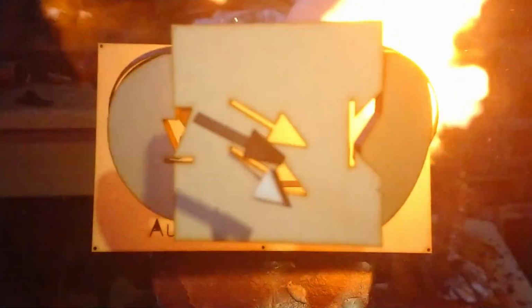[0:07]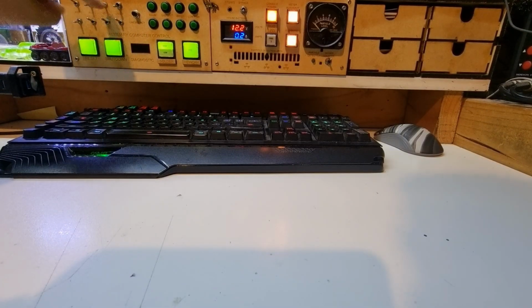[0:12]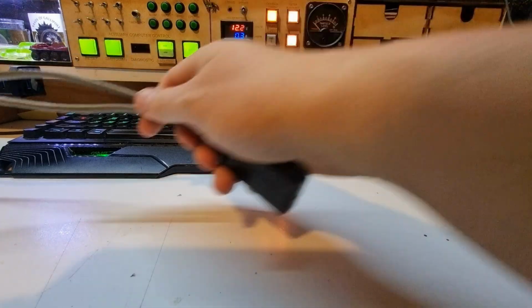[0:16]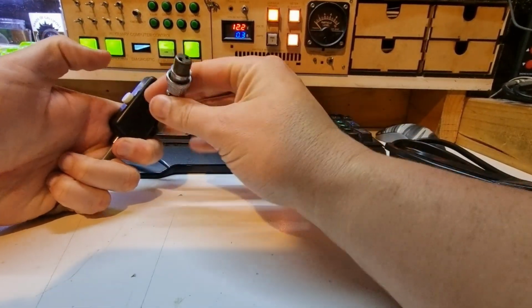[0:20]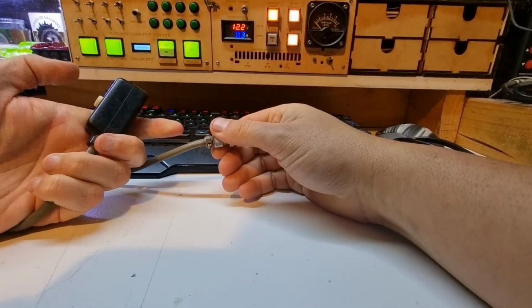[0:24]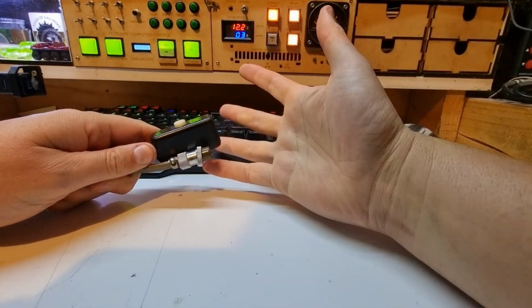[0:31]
We're in for another repair video today, and today we're going to need some cable because we're fixing this. Looks pretty innocuous, got a button and a two-prong pin plug on the end. This is off an X-ray machine made in 1968. I've been playing with this and I'm trying to get it up and ready to go for the local animal
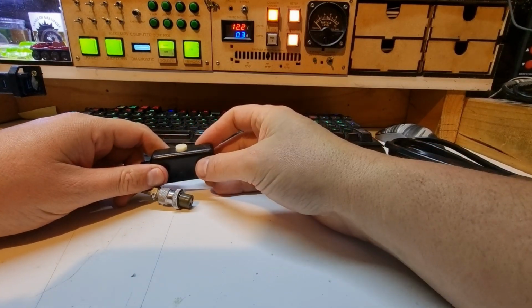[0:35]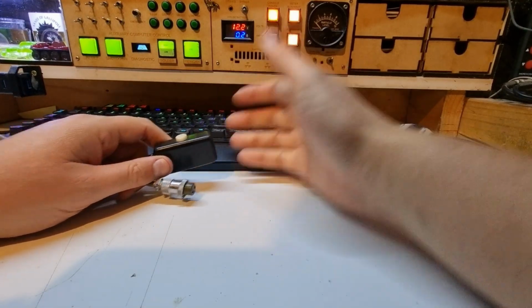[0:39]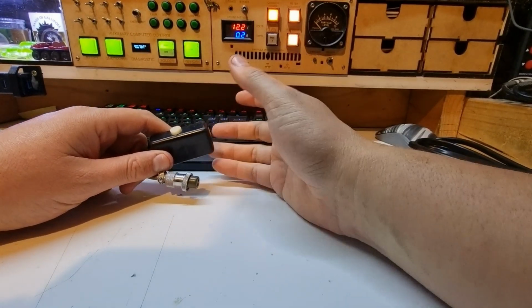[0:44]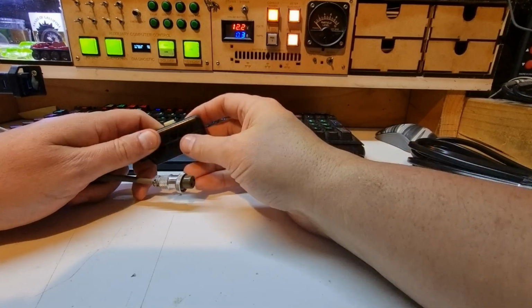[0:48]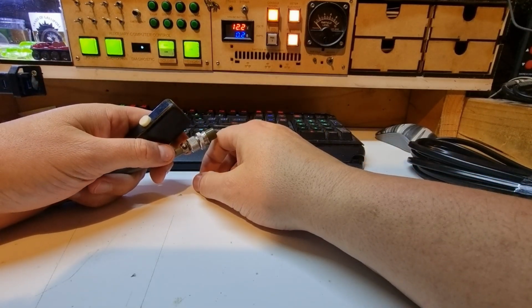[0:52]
rescue. But at this point we're going to need to find a digital cassette for it that's likely to cost about 14 grand. So before I go to the expense of actually looking for donations and getting this thing working, I need to know that it actually works properly. Last time I tested this, I had the exposure set to 0.03 seconds.
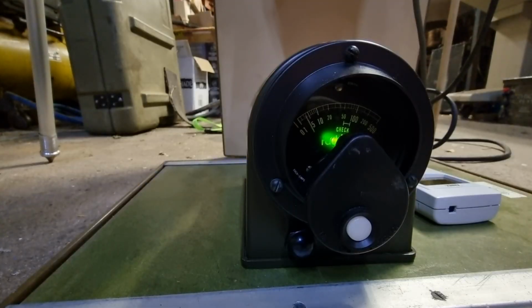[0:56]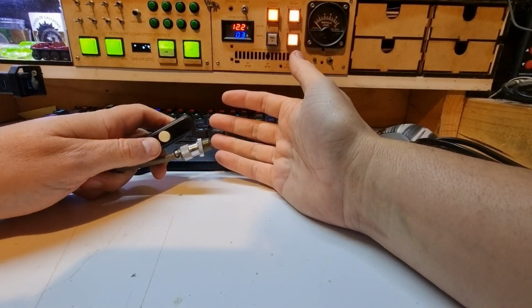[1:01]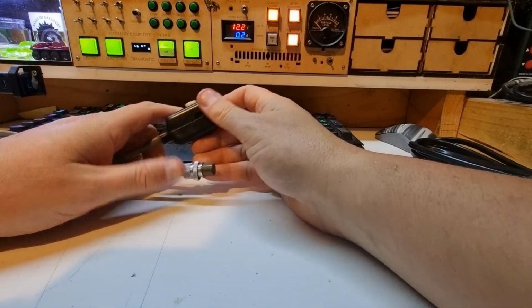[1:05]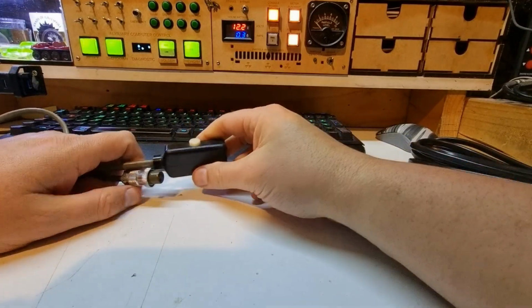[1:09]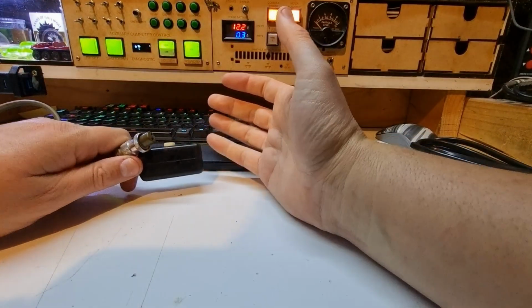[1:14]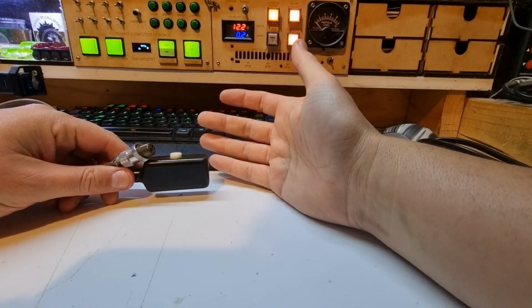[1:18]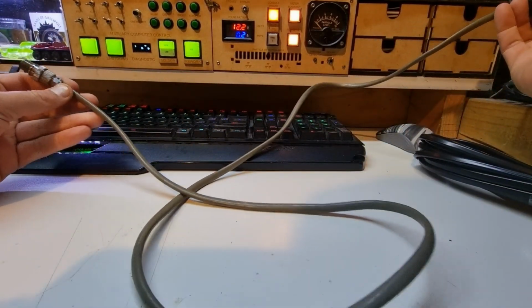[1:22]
And you can see from this little clip I'm going to throw in here that it definitely wasn't 0.3 seconds. It was quite a bit longer. So this lead, however, is only about a meter long. And you can hear from the background of that clip the little Geiger counter going off, which is my Radiacode 101. It's going off its tits because of all the backscatter. So I'd like to get a little bit further than a meter away when we test that.
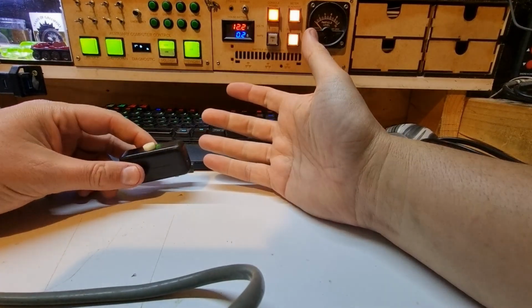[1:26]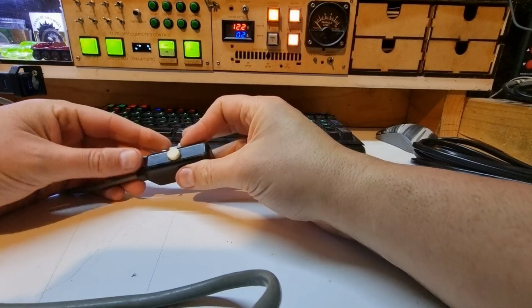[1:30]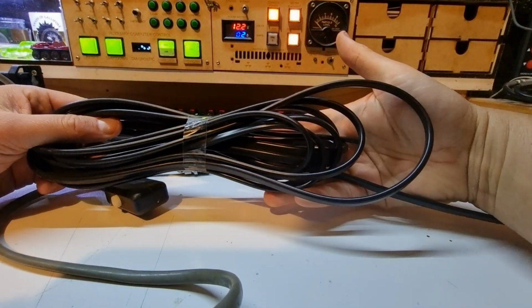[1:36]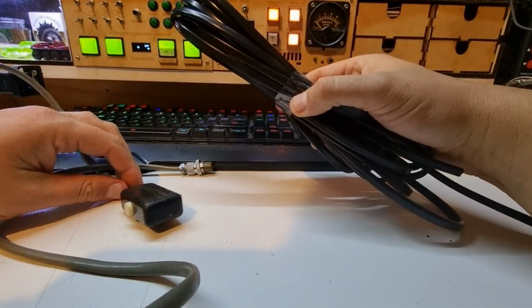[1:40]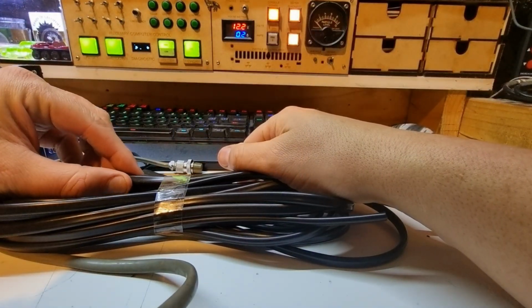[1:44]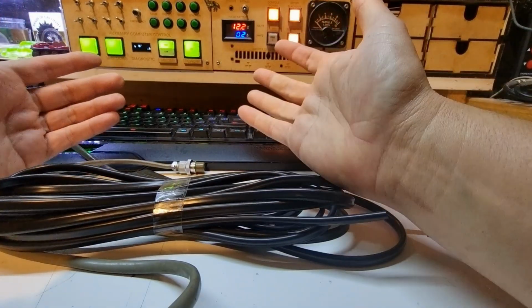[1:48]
Later on, I have a little 433 megahertz remote control kit. I might make a wireless remote for it. But we need to see if the timer works. So I'm going to use some of this cable that I had set aside for my Land Rover Perentie project and use it for a trigger button on this. Because I don't like getting irradiated, and I have to sit my license out for 3 months. So, yeah, I guess we'll use this instead.
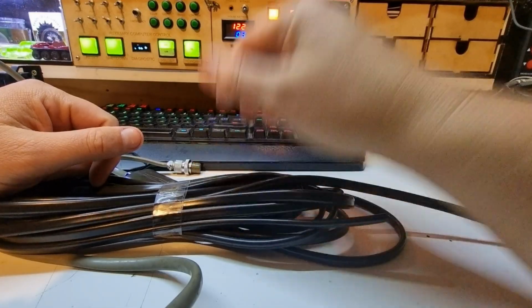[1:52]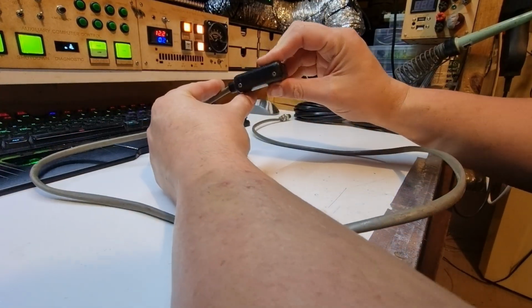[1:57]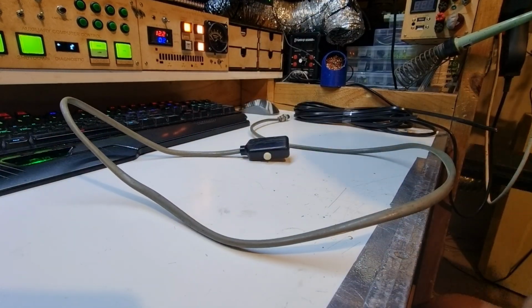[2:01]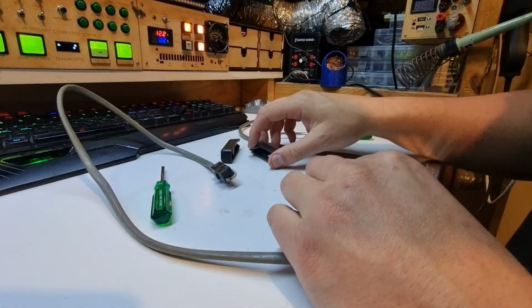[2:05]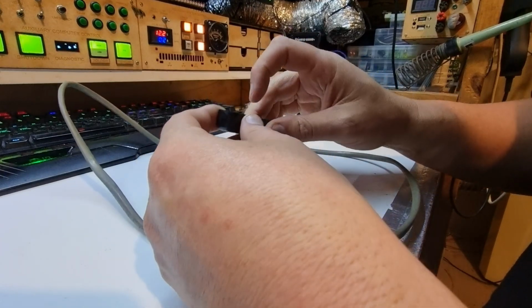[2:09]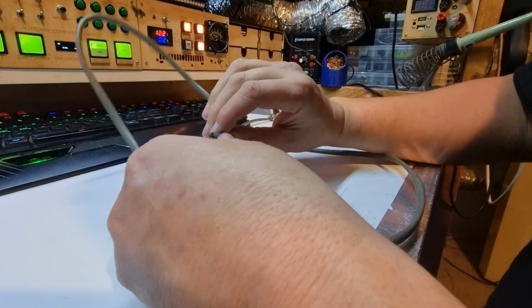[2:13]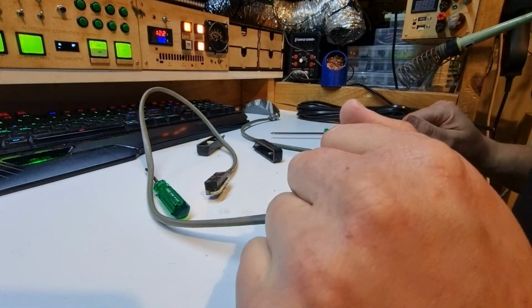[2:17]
We'll get more later. Alright, first order of duty, I need to look at how to get the switch open. Which looks like it's got a couple of Phillips screws there. Alright, fairly simple opening. And the screws remain somewhat captive. And this button looks pretty good. I might put a little bit of Teflon spray in there, but other than that, it's a pretty standard micro switch. Not a bad job.
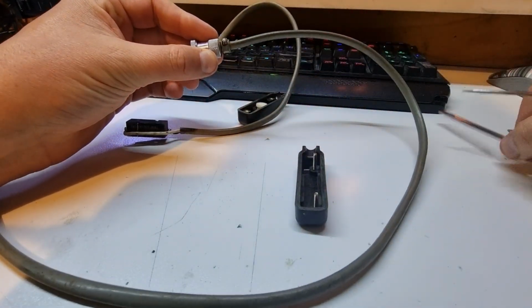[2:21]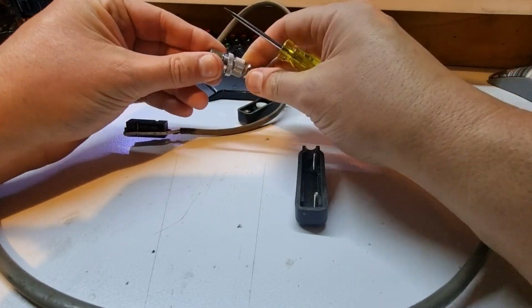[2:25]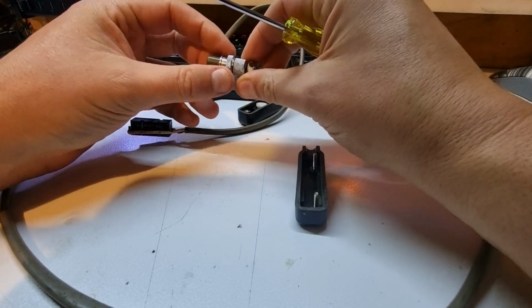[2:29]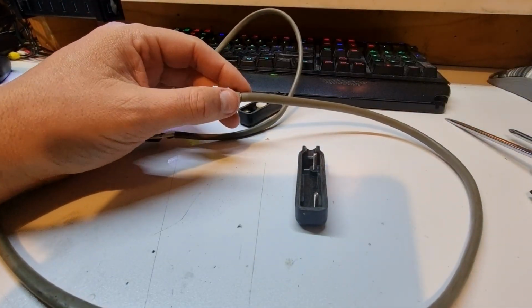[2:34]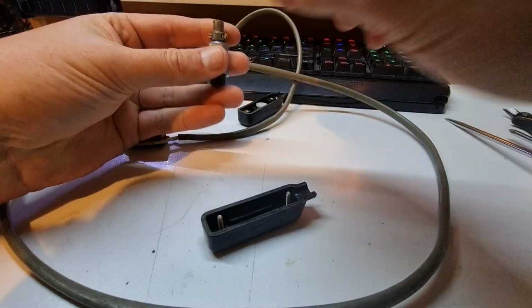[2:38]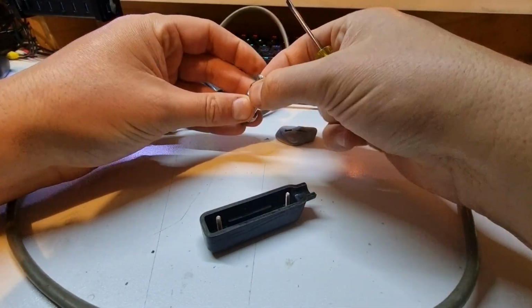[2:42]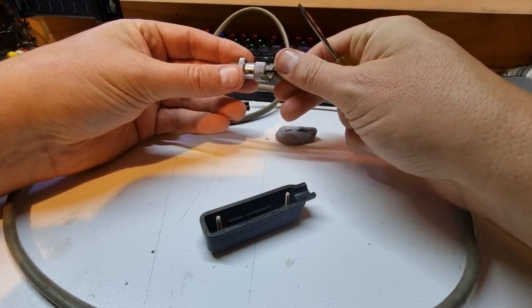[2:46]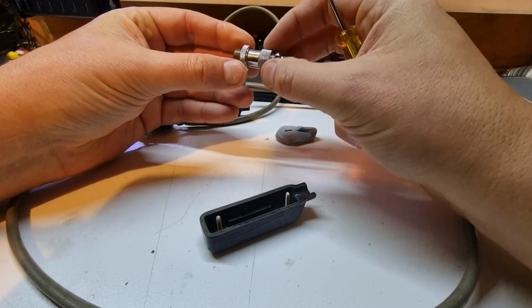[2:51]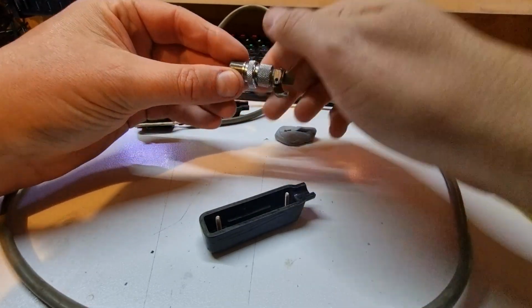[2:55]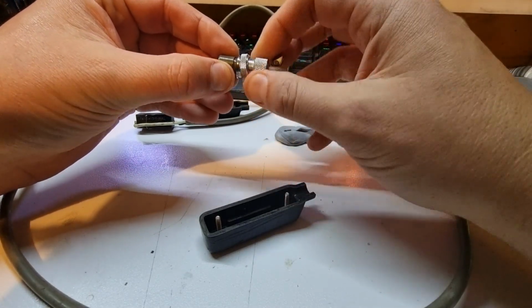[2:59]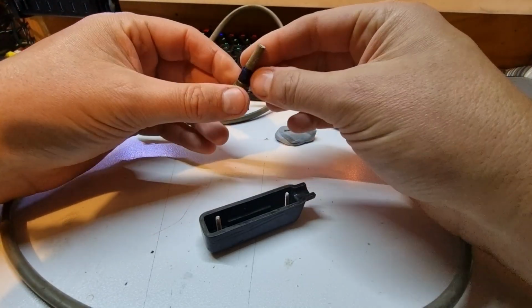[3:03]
Now for the plug shell, I've got a couple of different things to look at. First, we have the cable strain relief, and usually there is a lock nut or something midway through here, but I might make our life easier. I intend to rewire this anyway, so let's take a little bit of strain off things for us. Spin you around. Okay, now, there should be a lock nut somewhere. Okay, this one would appear to be just a little different to the ones I've dealt with before. It appears that this part is threaded in. All right, that's a little different.
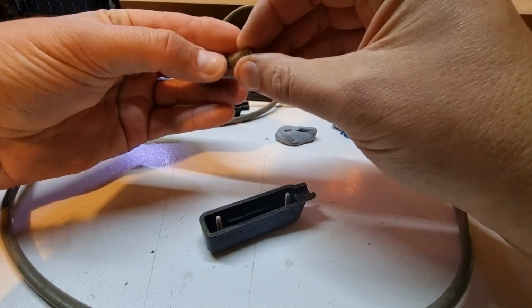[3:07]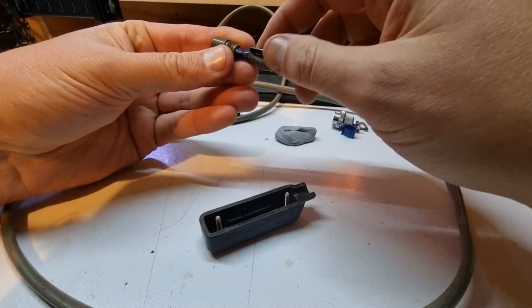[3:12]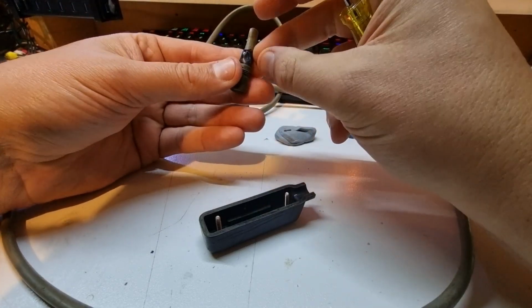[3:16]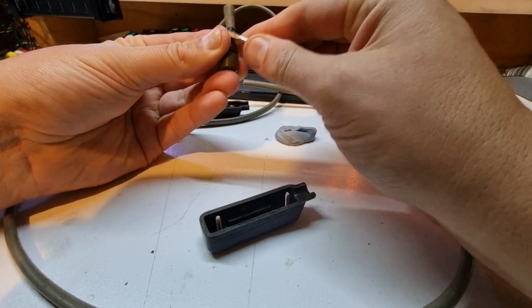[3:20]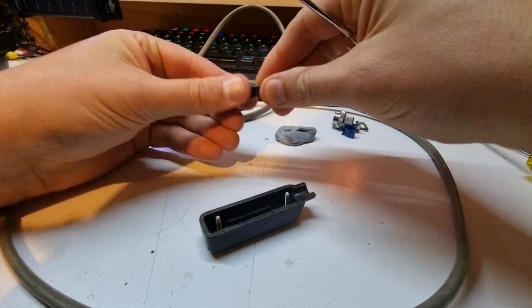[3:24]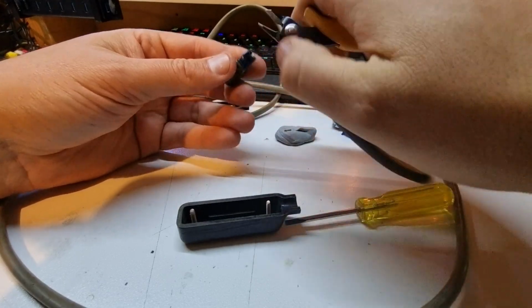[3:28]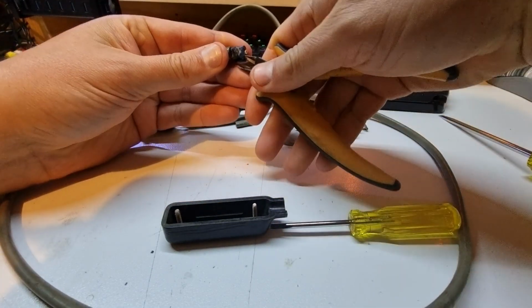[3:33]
And a bit of old insulation tape. This looks like it's had a repair because this is certainly not 1968 insulation tape in here. I'd say that the reason this is so short is probably because it's been repaired a few times and the cable's got shorter over time. We're going to probably do away with all this bit of cable. So we're going to trim it off. Try and dig down as far as we can under this tape and just trim it off.
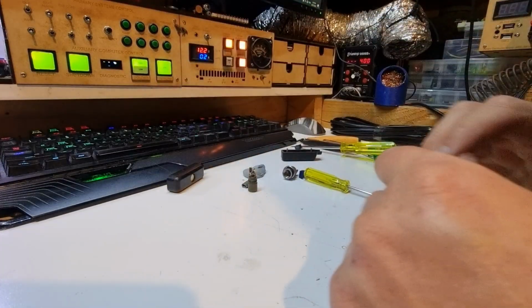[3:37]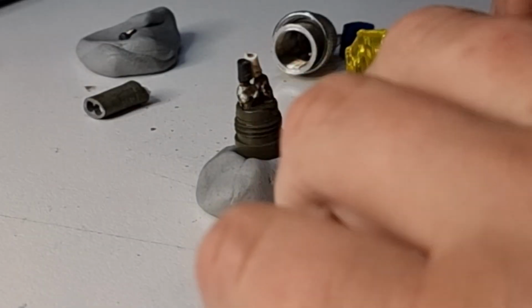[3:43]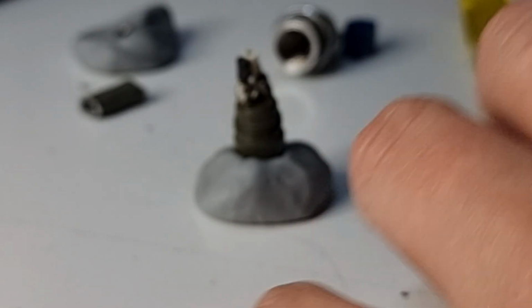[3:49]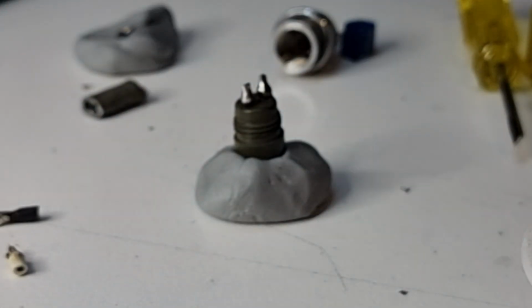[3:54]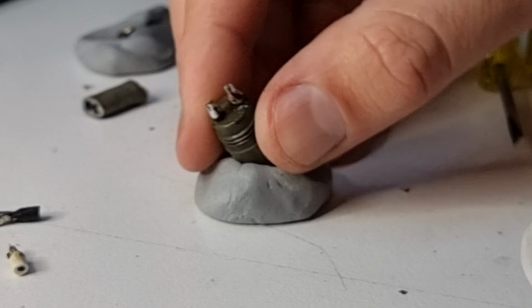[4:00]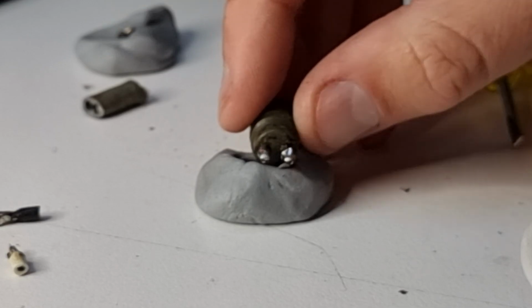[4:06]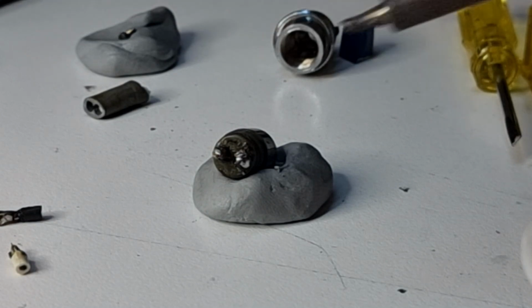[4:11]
Alright, soldering station on. Bit of blue tack here. Stick this down. Alright, got auxiliary lighting, fume extraction. Soldering iron is hot. Move our bismuth out of the way. I think it's gallium. Okay. Let's have a closer look at these. Focus, please. Alright. These don't look like solder cups, they look like straight out pins. I'll give them a bit more of a touch with a soldering iron here. Do they clean up like a solder cup? No, they're wire wrap pins almost. We can work with that.
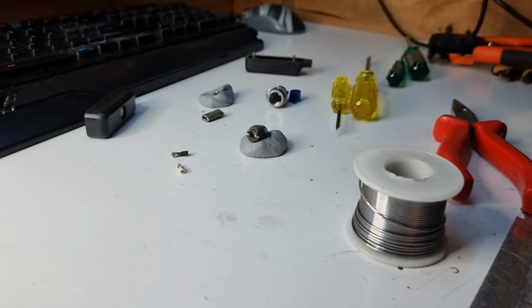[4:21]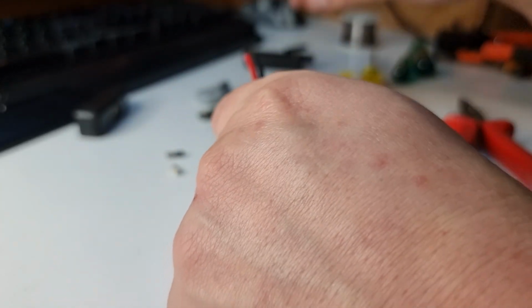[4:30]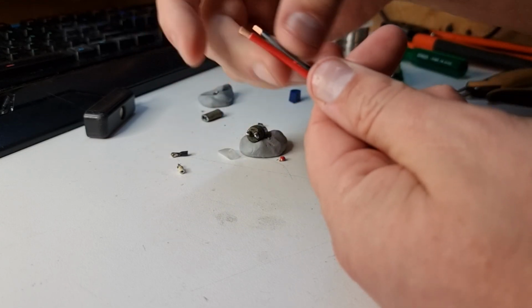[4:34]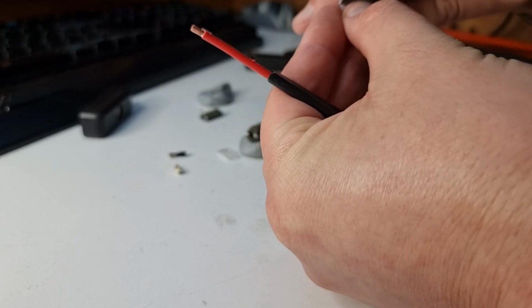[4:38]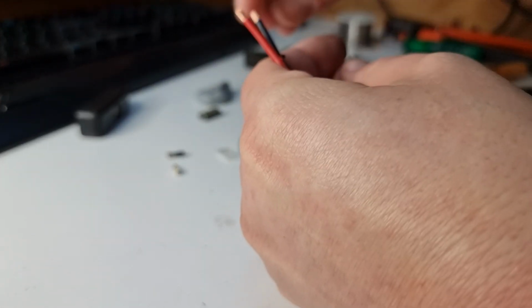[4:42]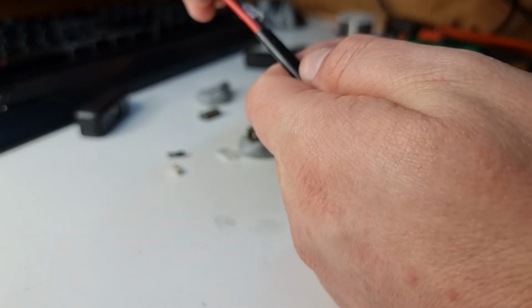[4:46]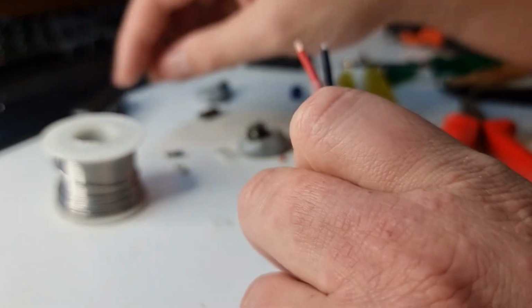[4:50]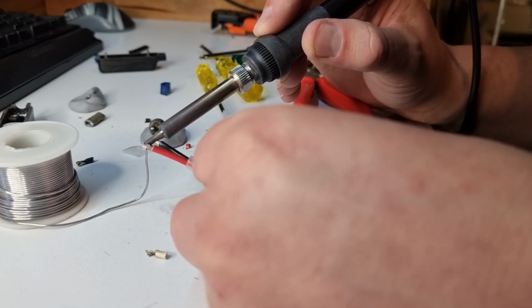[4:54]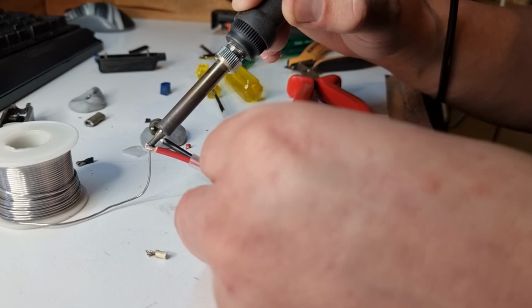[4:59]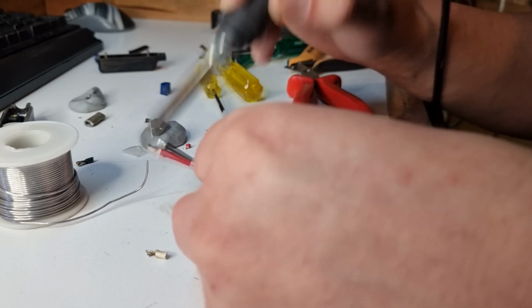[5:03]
Alright, we're going to strip some cable back here. Now, it occurs to me we should probably thread this through the cable gland first before we get too in depth. Alright, bit of heat shrink, we found some clear stuff. Actually, given how short that plug backing is, we might do half of that again. Bit of heat shrink. There we go. And we need to tin these ends. Definitely need my good Weller iron happening again. This one just doesn't quite get the heat into things.
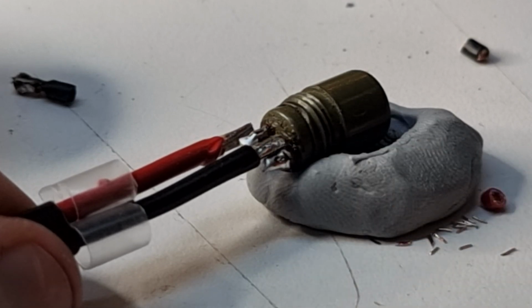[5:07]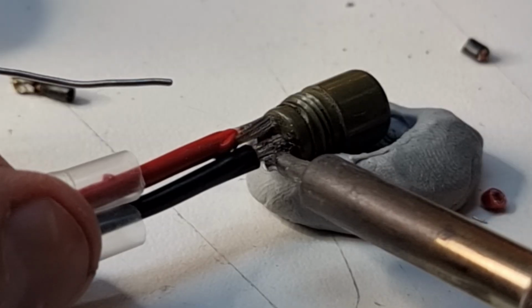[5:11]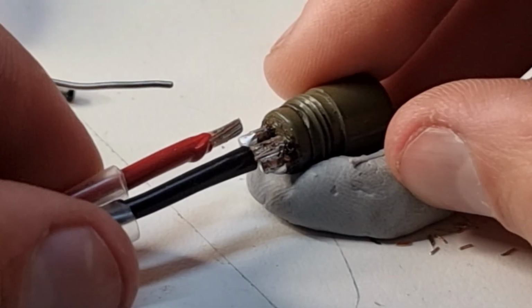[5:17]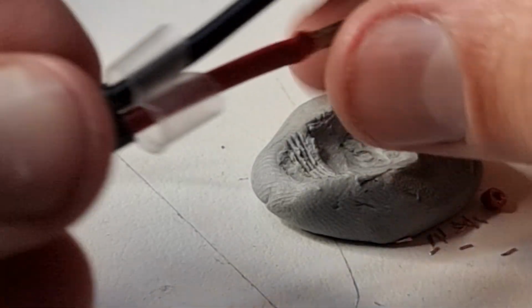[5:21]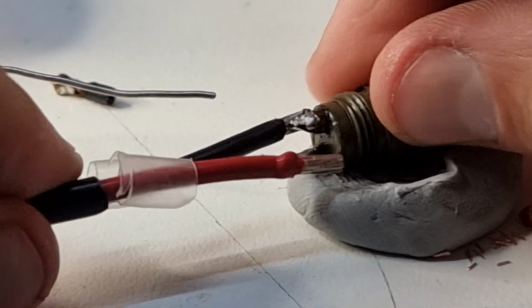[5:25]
I have a bit of a method to my madness, so just bear with me for a minute. Now if I do this slightly offset, I can roll over and solder the other one on the other side, also slightly offset, and things should fit nicely. Oh, those pins twist. Interesting. I'll train this cable to roll over a bit too.
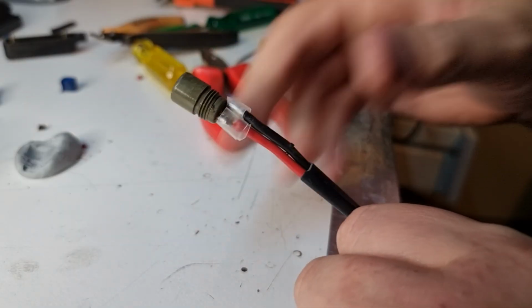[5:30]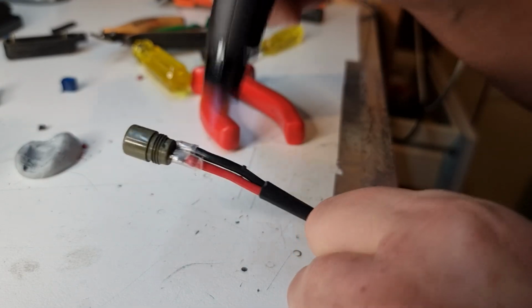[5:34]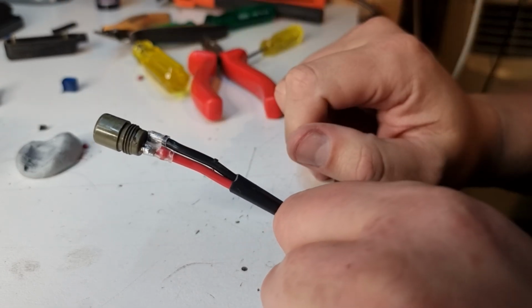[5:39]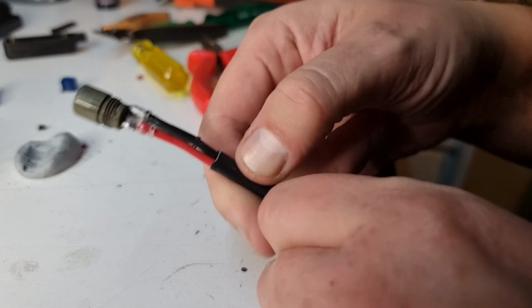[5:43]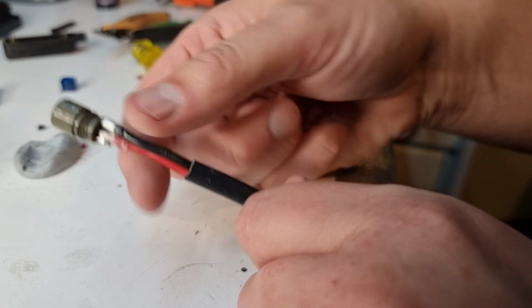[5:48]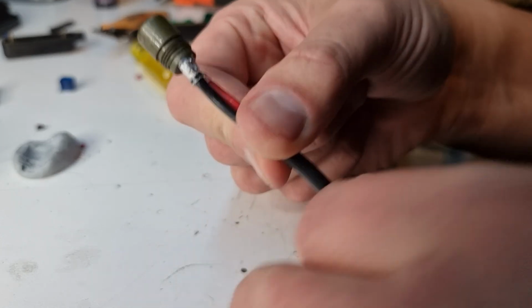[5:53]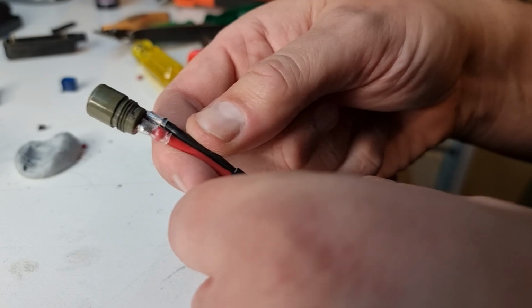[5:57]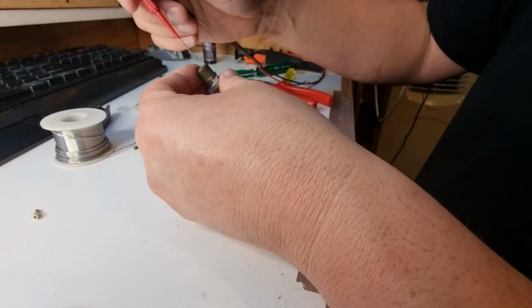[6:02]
Right, now this cable is really designed for slightly thinner two-core flex, like mains cable or something. Not the heavy DC cable I'm putting in here, but we are going a fairly decent distance. And I'm pretty sure this handles mains voltage, so we definitely want that extra insulation in there. It's not the best positioning from the pins, and I know people will be critical of that. Certainly looks better than what was in there, but I need to keep these tucked in here so they fit inside that shell. All right, I'm already frustrated with this cable. I keep dropping stuff. It's difficult stuff to work with.
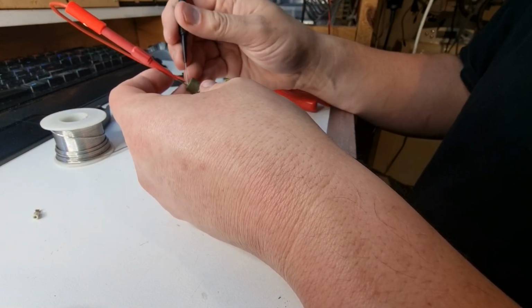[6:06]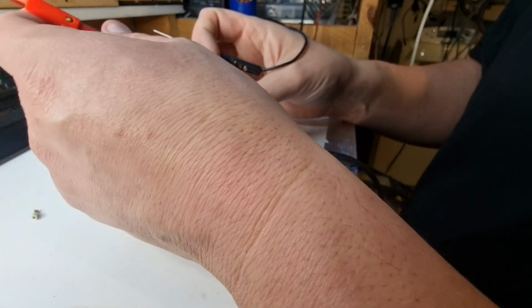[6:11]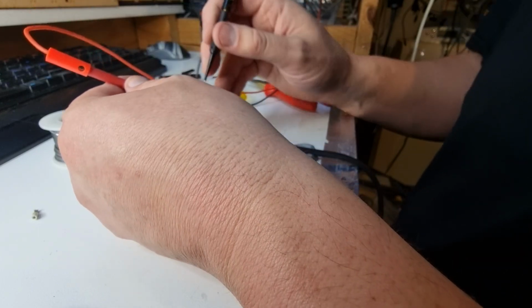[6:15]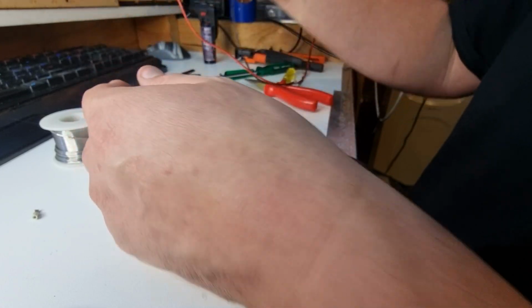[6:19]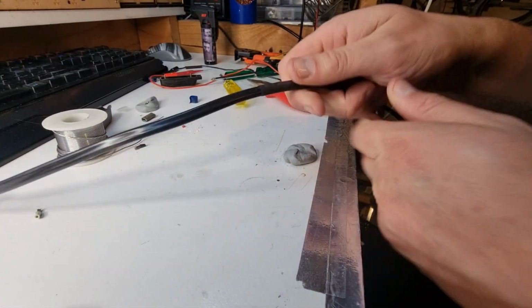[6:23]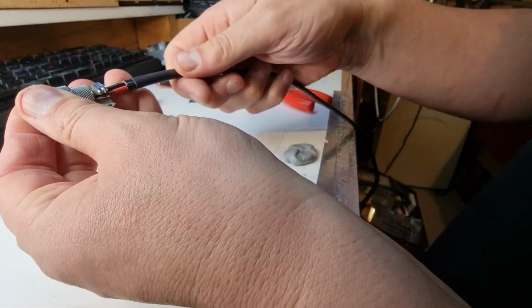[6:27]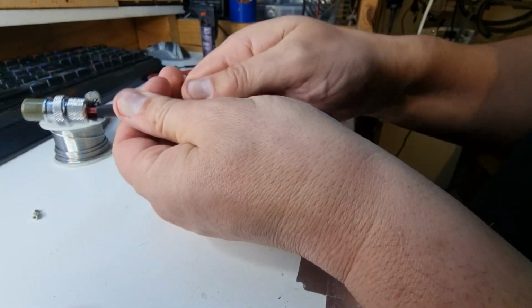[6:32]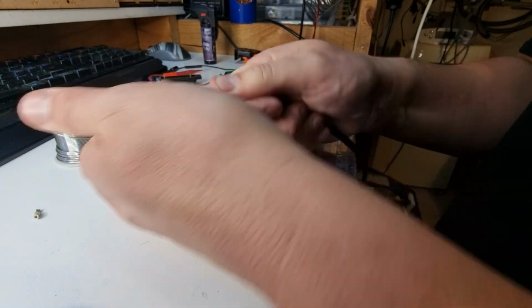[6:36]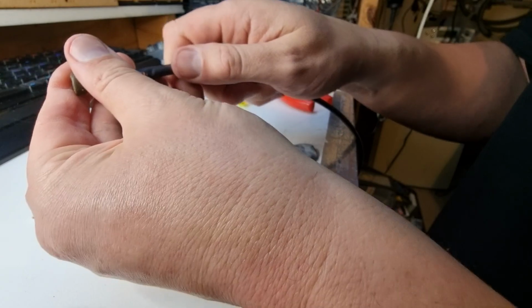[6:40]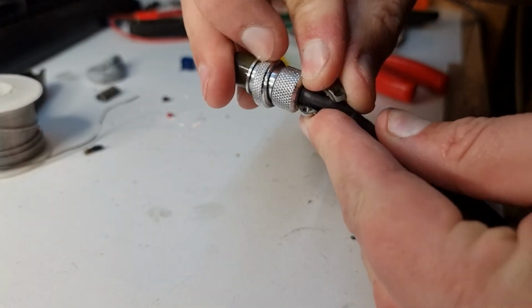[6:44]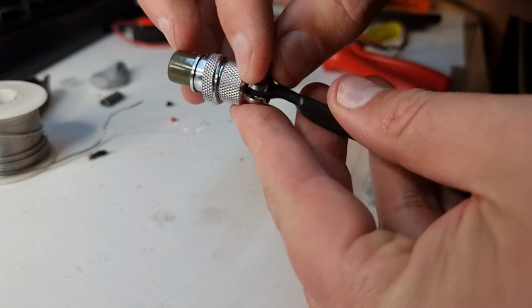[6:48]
All right. Does my beeper work? Why is my beeper not working? Okay. So, no short circuits, no short to the shroud. Good. Alright, now just to keep everybody happy, I threaded a piece of heat shrink along the entire length of the cable so we can slide over those two bits. Because again, I'm not sure if we're carrying mains voltage here. We'll pull this piece of heat shrink right up inside here. Make sure there are no exposed conductors there. Strain relief. Oh. Maneuver this little bit over. Get our missing screw.
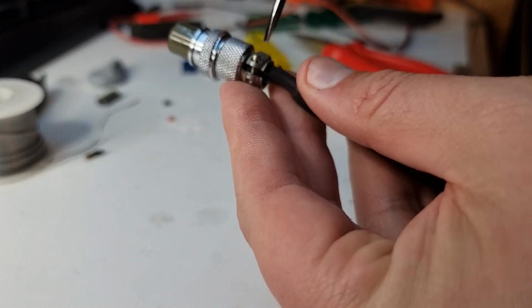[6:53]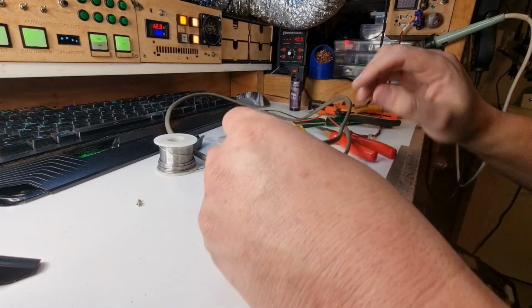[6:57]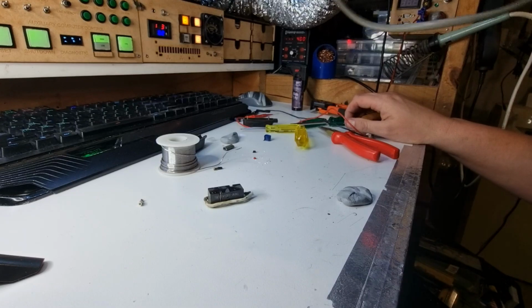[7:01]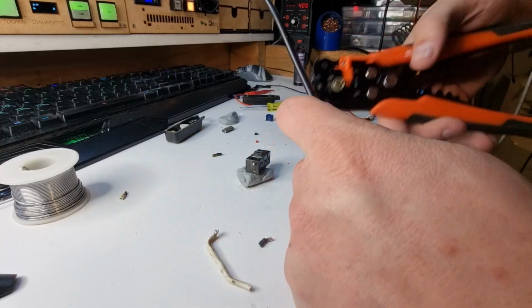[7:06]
And our small flat blade. Now if I sound a bit apathetic towards this project at the moment, it's because that cable is actually a bit of a pain to work with, at least on this size stuff. Right, we need to strip a bit of wire back here.
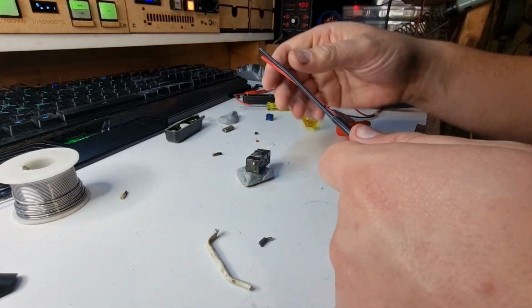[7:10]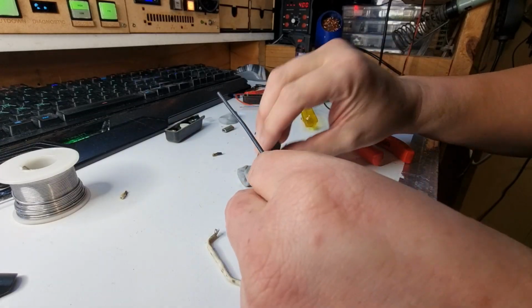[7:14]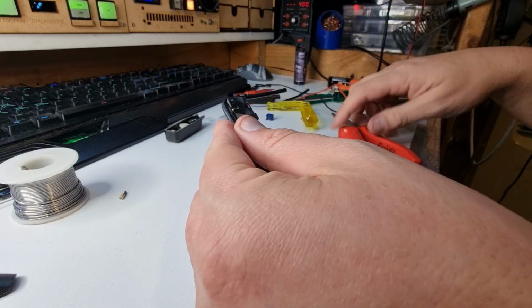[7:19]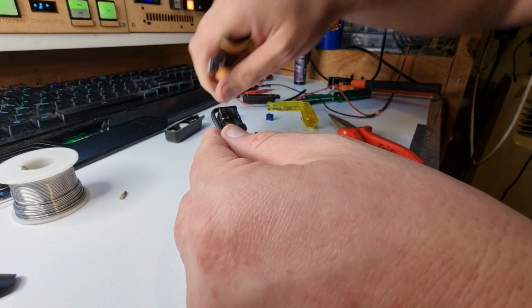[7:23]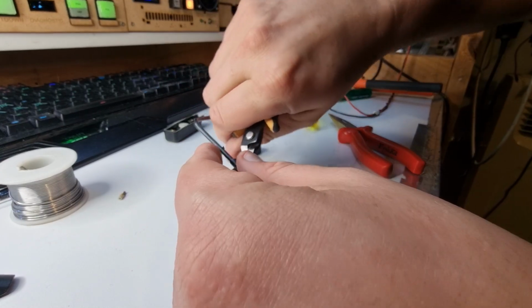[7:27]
These things make life much easier. So I guess we're going to flip our black one around the back. We're going to come up to about there. So that's going to be good. You will trim about there, and you will get trimmed at about the same height there.
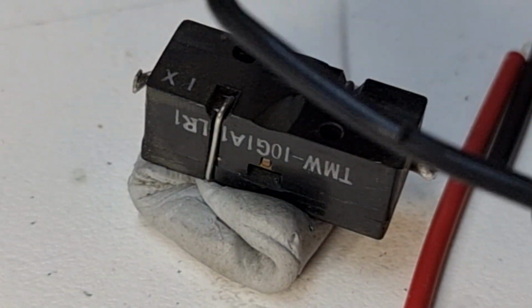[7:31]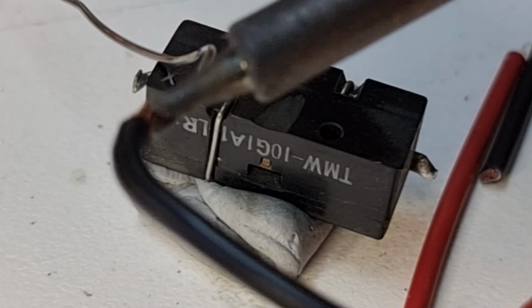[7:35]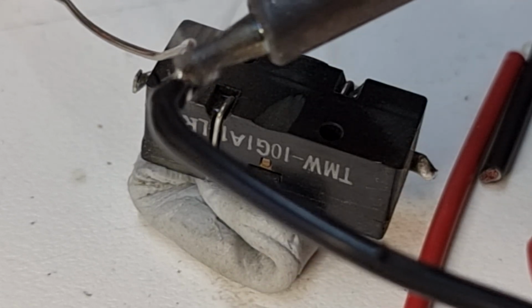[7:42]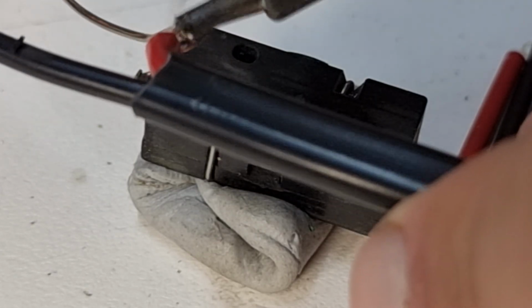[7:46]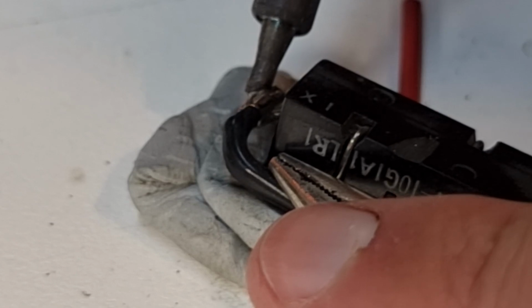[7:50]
Okay, we've got our conductors stripped here. Going to where we get our solder in the right spot. We'll wet these down with a bit of solder. Get it nicely soaked in there. Glad I have fume extraction right now. So we'll get this nice and hot and soak it onto there.
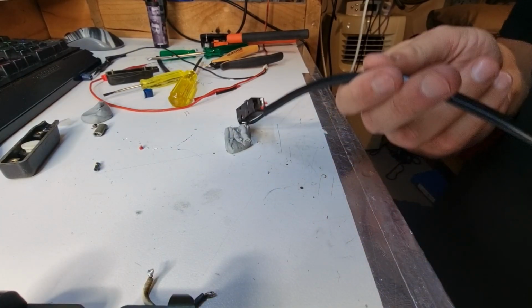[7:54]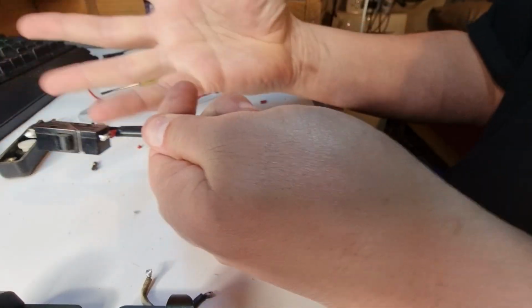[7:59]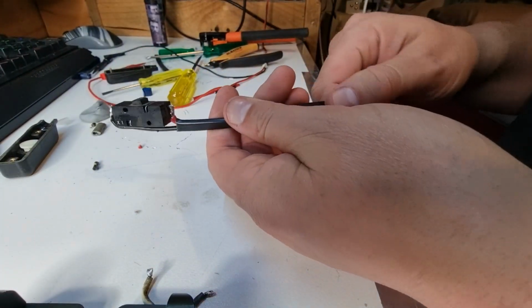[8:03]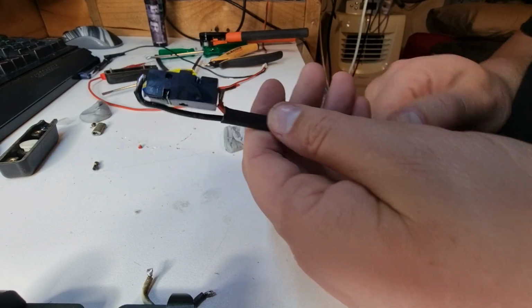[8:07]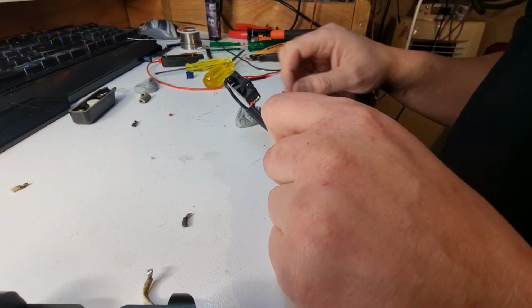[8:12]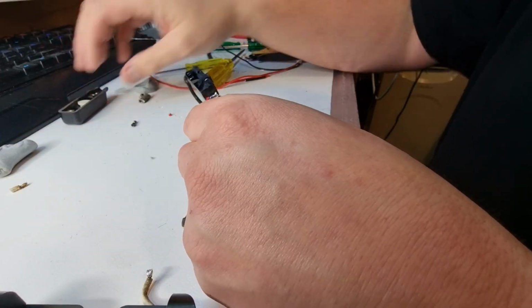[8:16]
Alright, I had the problem with this cable trying to lever this off the blue tack all the time. And when you touch this, it would fray out. There's so much tension in this cable. In any case, this looks slightly better than what I had in terms of connections. Hopefully it fits back in the shell. Alright, I'm going to jinx myself and I'm turning the soldering iron off. This has been somewhat more frustrating than I hoped.
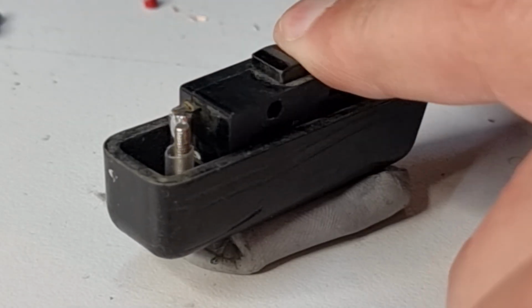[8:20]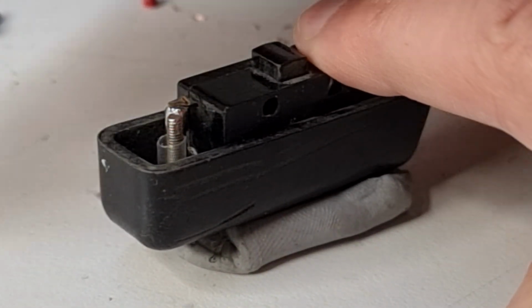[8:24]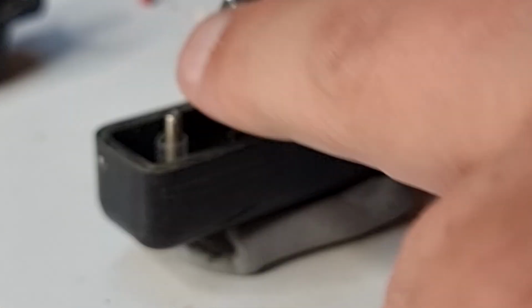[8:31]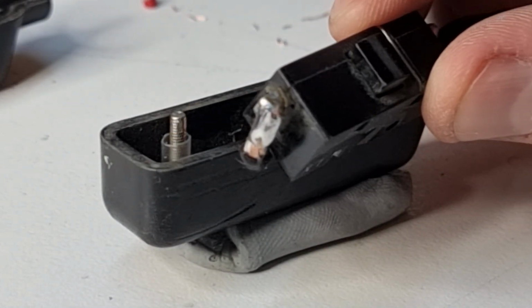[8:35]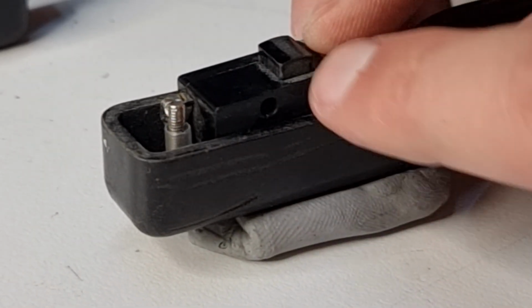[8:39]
Alright, we stuck a couple of bits of heat shrink in there. Gives me a little bit more peace of mind. There is still potential for that to touch, although I see in the top here, these two blocks may push that contact away. But I think I may re-solder this around the corner a little bit, just to save that as well. Alright, I like this pin arrangement just a little bit better. There's a little bit more tolerance between those contacts.
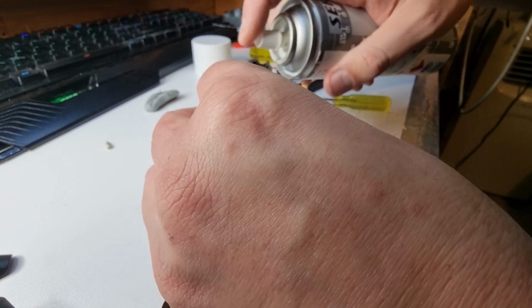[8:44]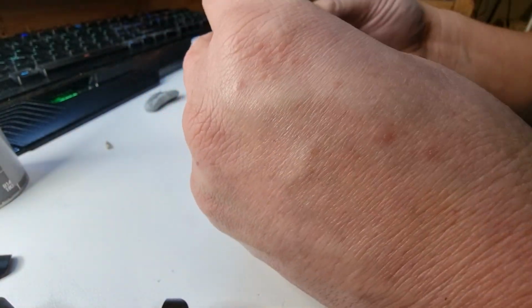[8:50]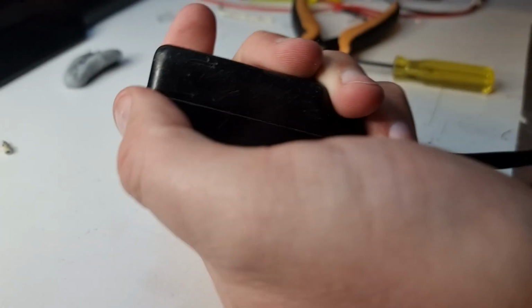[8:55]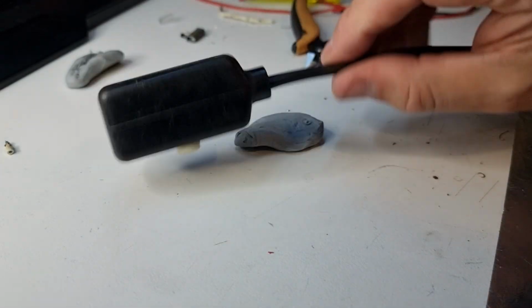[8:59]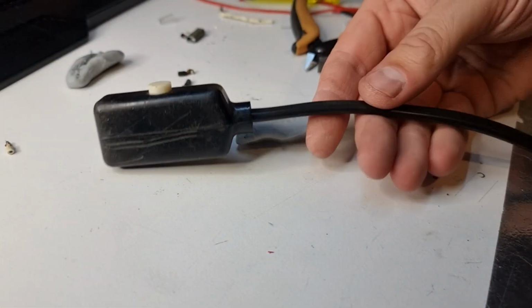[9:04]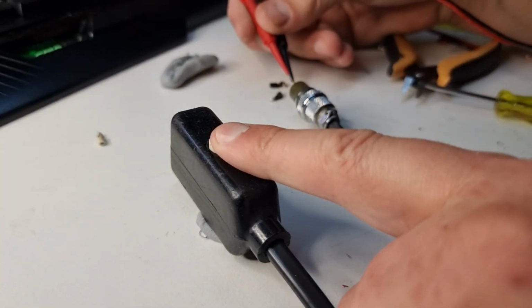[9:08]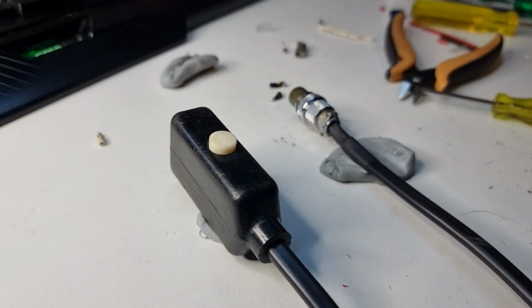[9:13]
There we go. Drop our button back in. Do a function test. Works. Watch what happens when I let it go the way I had it. It all rolls around like this on the cable. We have our beeper in here. We've got our continuity testers. Okay, that works. Now we can test if the timer works on the X-ray machine.
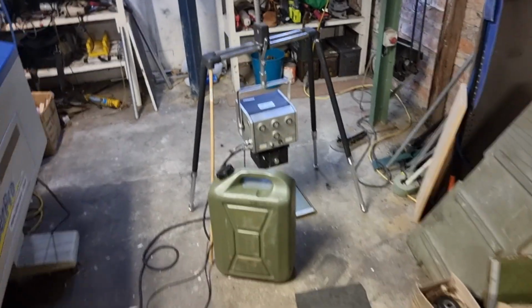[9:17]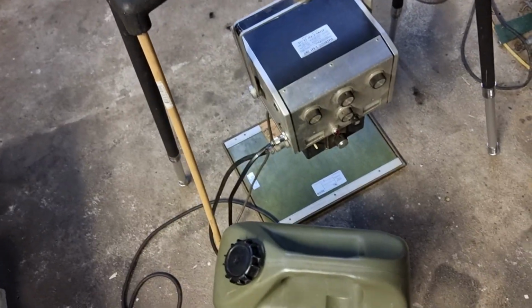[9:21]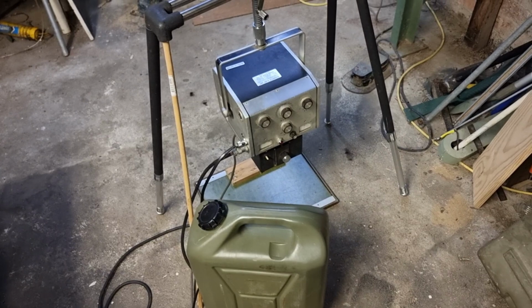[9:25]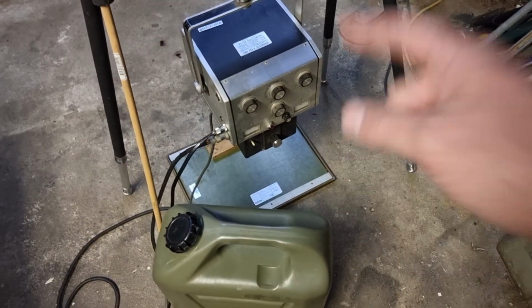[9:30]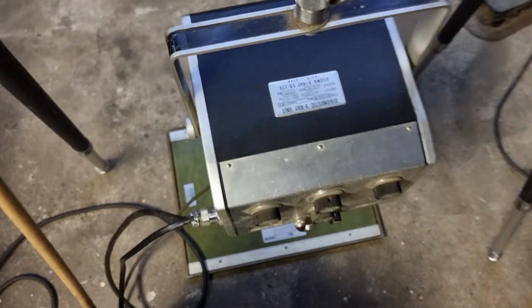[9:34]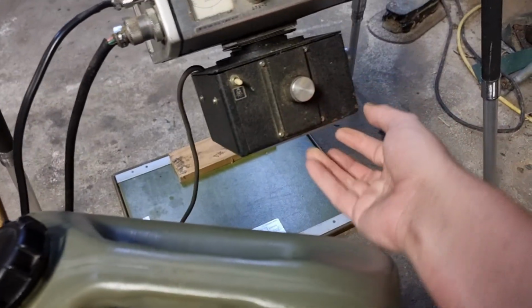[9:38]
Alright, we've got the temporary setup in the shed. This is a jerry can full of water, using it as a bit of a shield slash moderator, helping stop some of the backscatter. This is a lead plate on the floor. It's one of the cassettes that came with it. This unit's from 1968. I've got it set to the 1 second setting. We have it set to 2 milliamps.
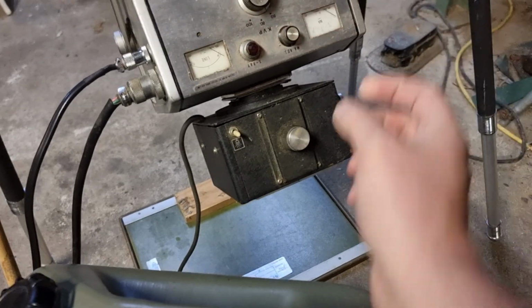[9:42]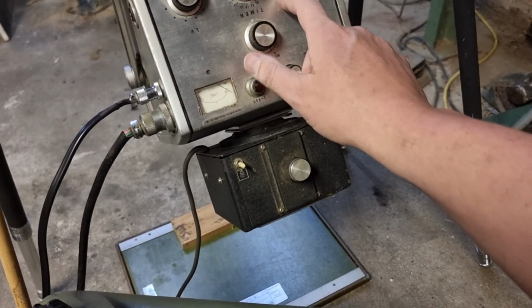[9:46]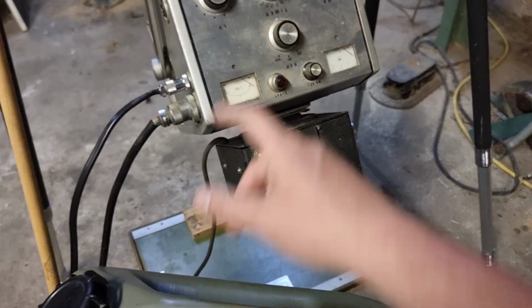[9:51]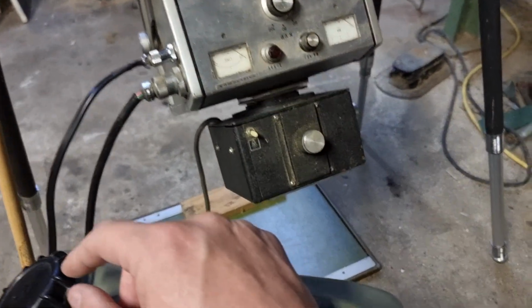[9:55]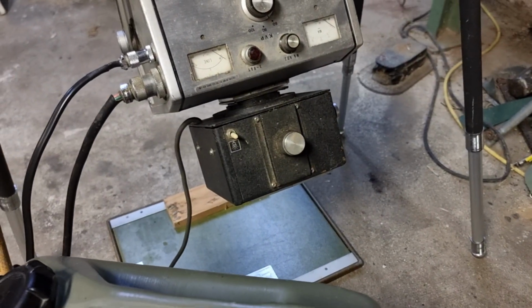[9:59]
Let's set to 15 milliamps. Maybe this was the high range setting. I'm not sure. I think that should be 2, but it might be something higher. Anyway, we'll set that to 2. That's our line voltage. We'll check that before we start. And 60 kVp, so we should be pretty right. This is in the center position.
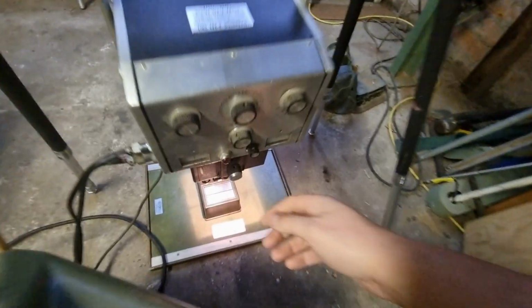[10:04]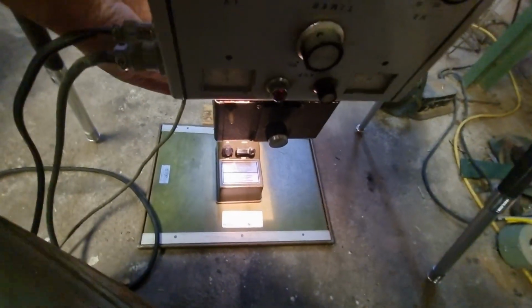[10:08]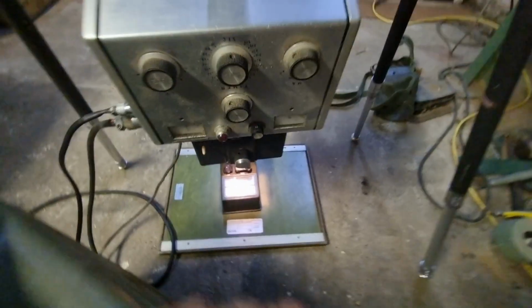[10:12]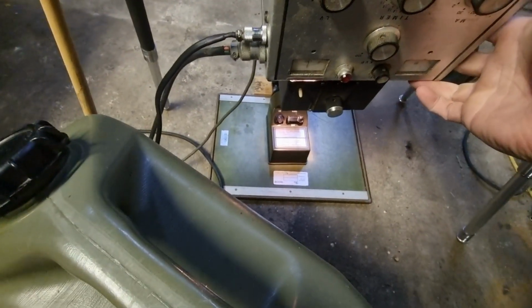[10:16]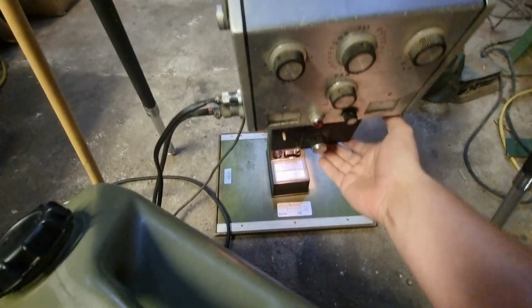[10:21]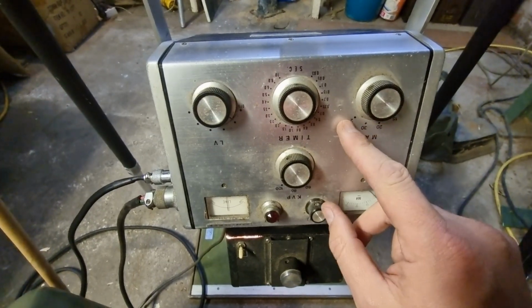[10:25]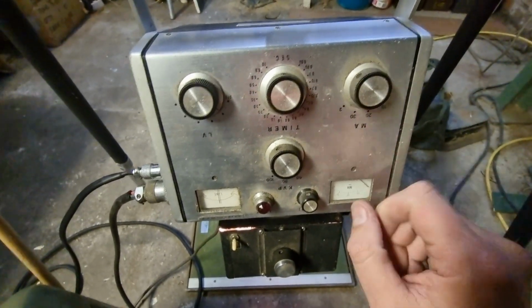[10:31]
All right, we need to set our aperture nice and narrow here. Where are we? And just so I know it's not running, I do have a dosimeter on me. That's pretty good. Okay, so let's double check our settings here. Around 15 milliamps. Previously I was on this, which I thought was 2 milliamp, but it seems strange that it's on this end. I'm going to go with a safe bet of 15 this time.
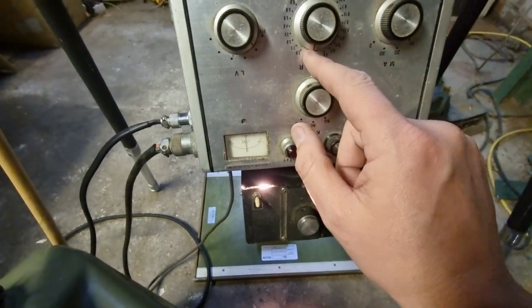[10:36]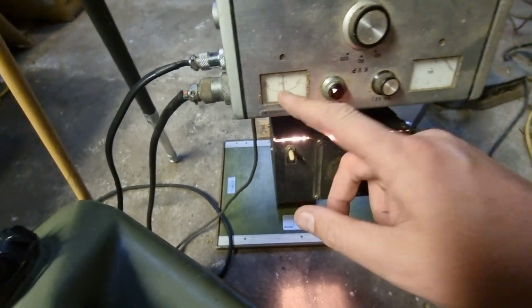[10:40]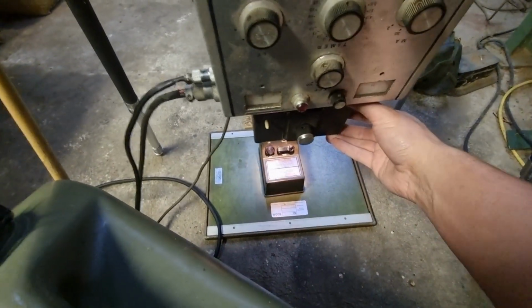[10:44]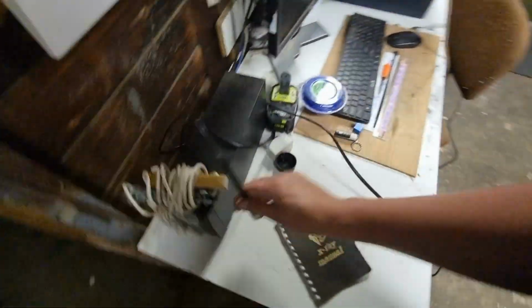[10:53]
Because last time we had it on 2, we got 5 rads out of it. We're on 1 second setting. Line voltage is correct. It looks pretty good. Let's line up our aperture here. Right on that. And our camera's there. Water for moderator. Now we have way more settings. So let's see if we get 1 second. Let's go. 3, 2, 1.
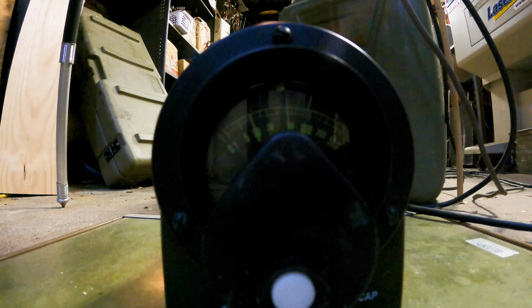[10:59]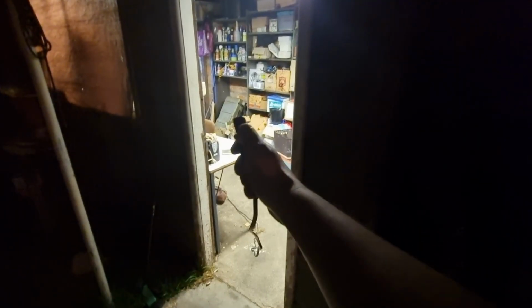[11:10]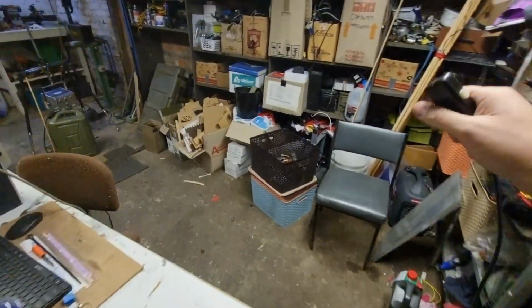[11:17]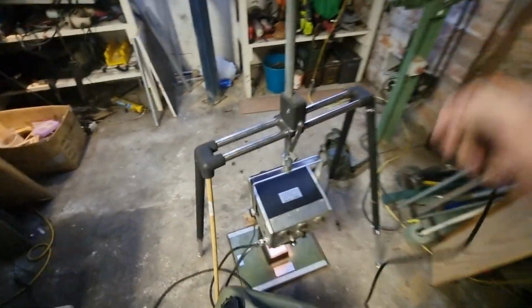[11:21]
Okay. I'm going to get a bit further back. We certainly got more than 1 second on that. I think it did 1 second. Let's try again. Okay, that looks like 1 second. And I'm getting significantly less radiation out here. So that's a good sign.
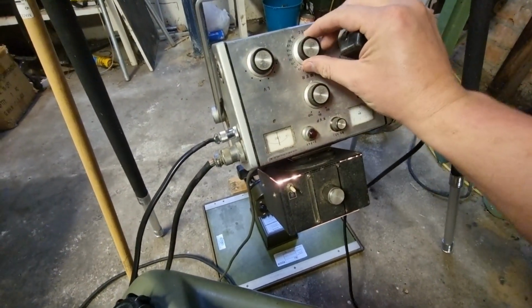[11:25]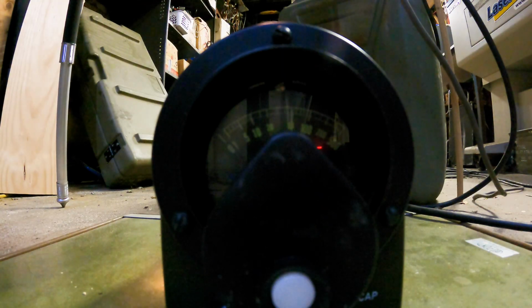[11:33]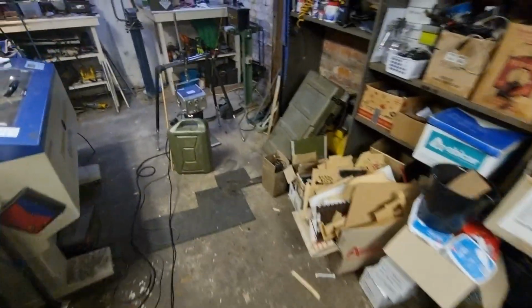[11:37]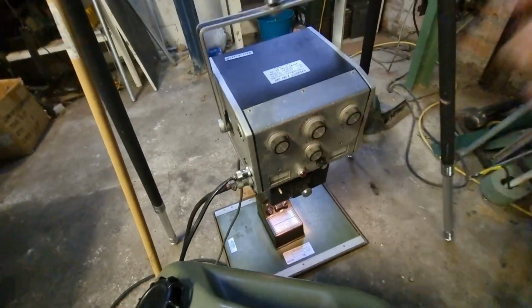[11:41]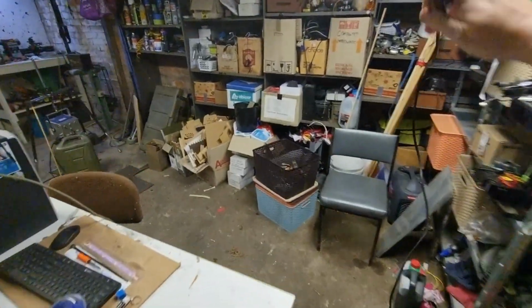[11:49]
Let's try a half second time burst. Okay, time for half second. That sounds like half a second. I think the timer is working. Let's go right down to the shortest one. See if that works. That's a very short burst. I think the timer is working.
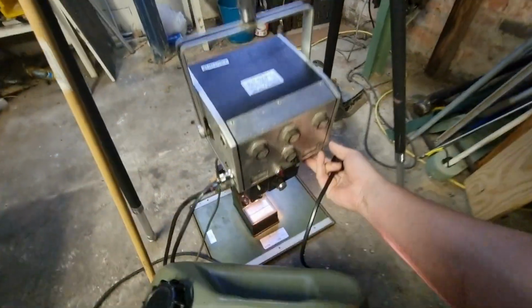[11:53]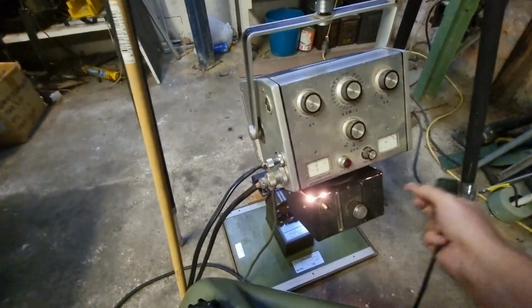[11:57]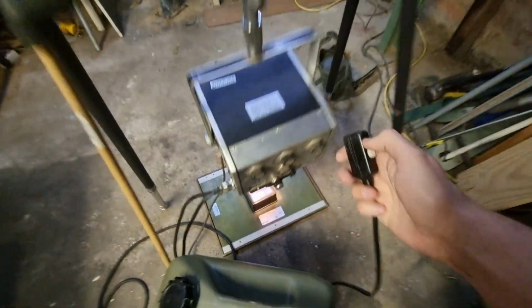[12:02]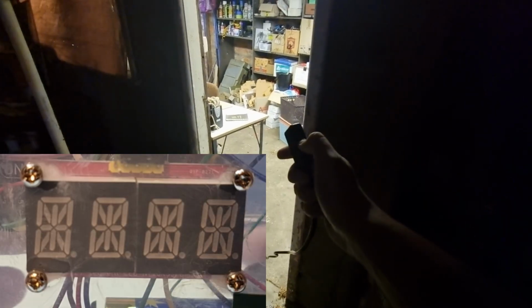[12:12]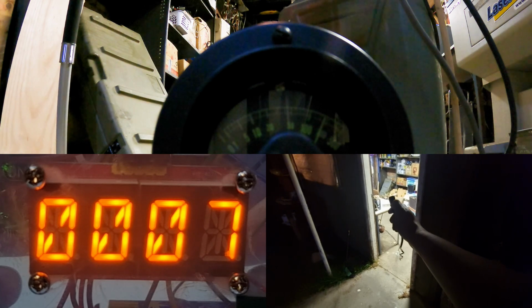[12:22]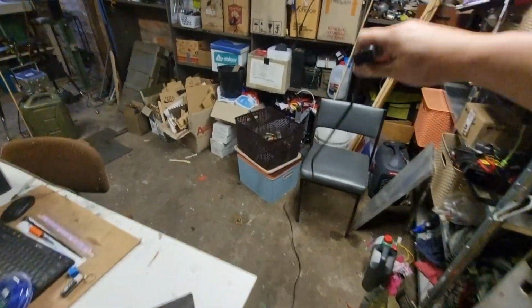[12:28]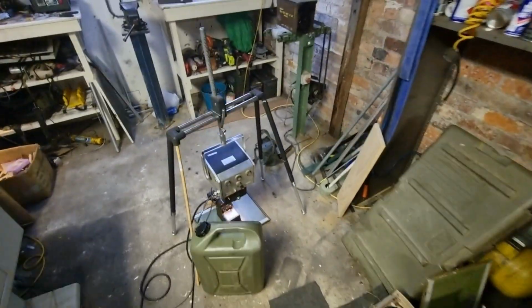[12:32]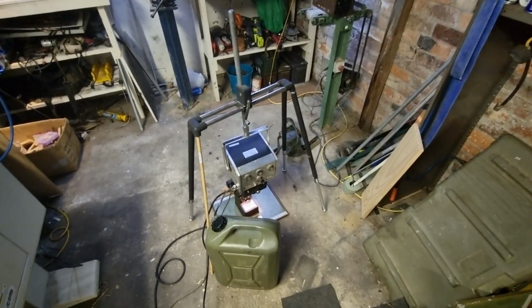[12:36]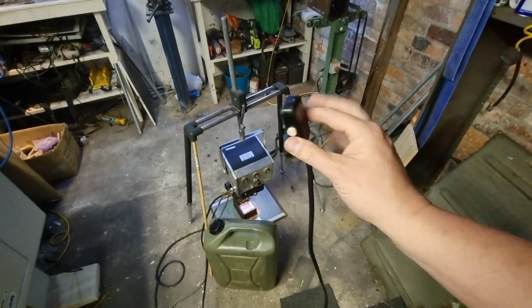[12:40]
All right. Let's go to a long exposure. A retired X-ray technician has given me a bit of advice on this. He will remain unnamed for obvious reasons. But we'll go 10 seconds here. I'll wait till the camera timer. 2, 1. Right, that was 10 seconds. And it works all right. And the high alarm hasn't gone off. So this setup's working reasonably well. So, I guess we can turn it off for the night, but good success.
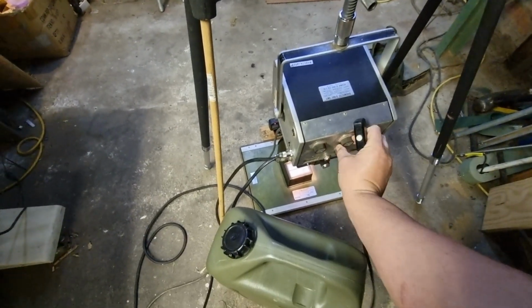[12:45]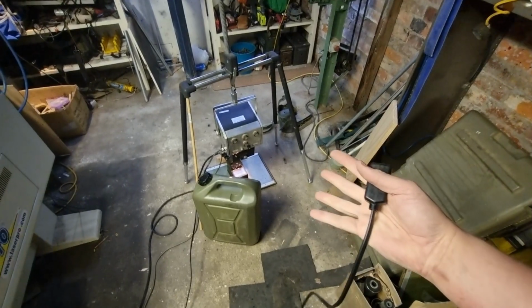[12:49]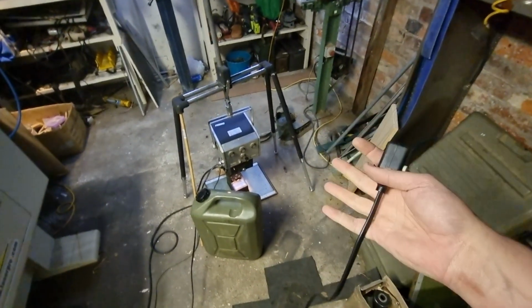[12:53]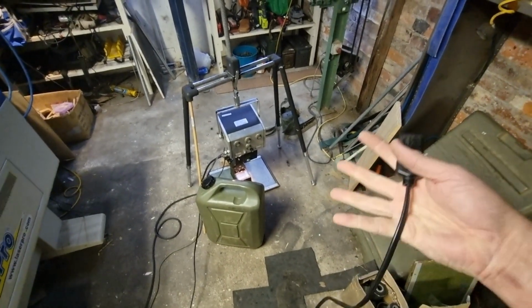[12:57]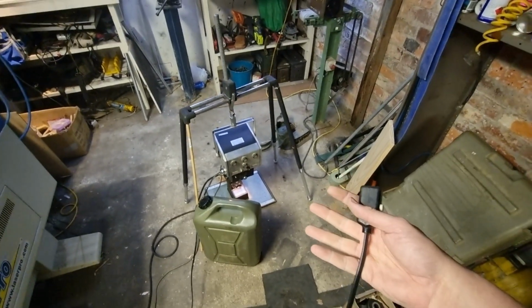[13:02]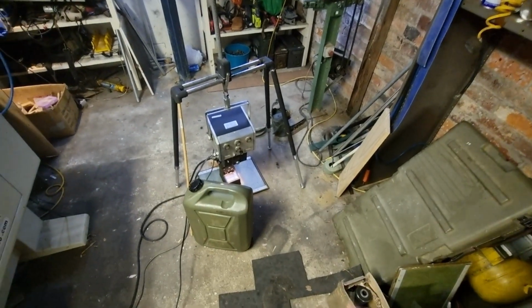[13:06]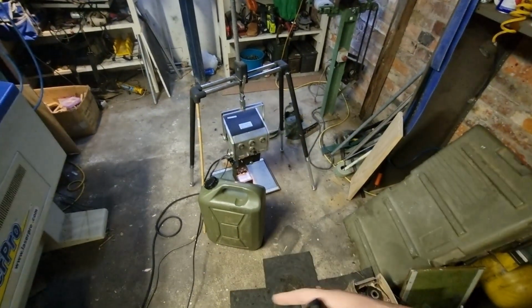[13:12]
The button works. For safety, we're going to turn that right down. Now we can look into digital cassette options. It might be CR or it might be DR. I've got to do my homework. I'm still learning on which ones we can deal with. Ideally, it would be nice to get one of those nice Canon DR cassettes. But last time I checked, a second-hand one was $14,000 Australian dollars, a bit more than I can afford to donate to the animal aid. So anyway, and I need to fix this leg and everything as well.